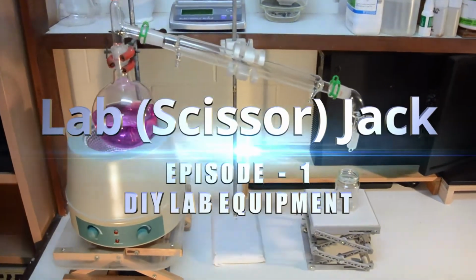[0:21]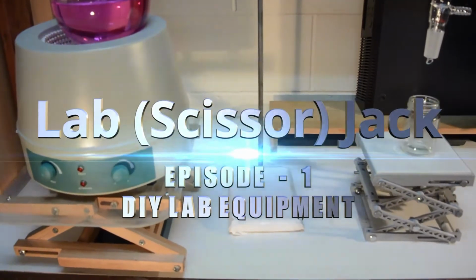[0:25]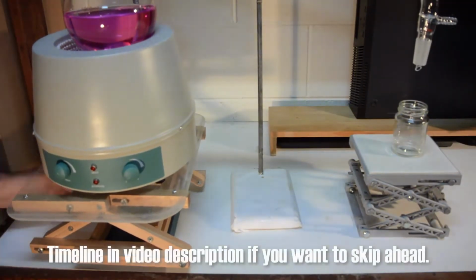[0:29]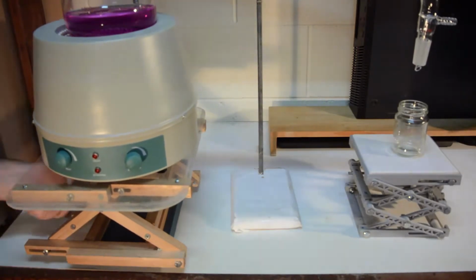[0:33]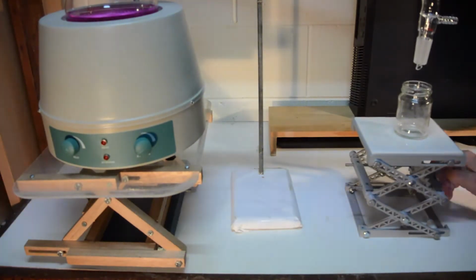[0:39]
Welcome to episode one of a new series on DIY equipment for home chemistry labs, which is designing and making a lab scissor jack. A scissor jack being very useful in commonly performed procedures such as distillations, greatly assisting in setup convenience and safety. There is both a 3D printed version, and for those without access to a 3D printer, a version made from wood, which simply requires a handsaw and drill.
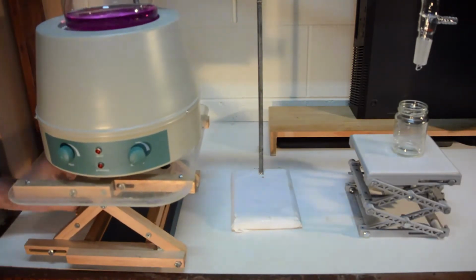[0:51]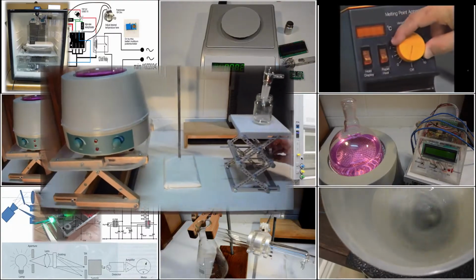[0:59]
The wooden version enables a very robust lab jack, capable of safely supporting tens of kilograms, but which also truly does enable a DIY scissor jack for just a few dollars, without the hidden need of hundreds of dollars or more in tools. As I said, this is the first in a series documenting the design and making of various
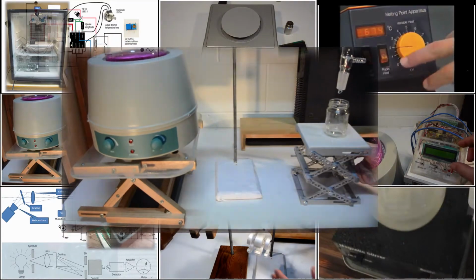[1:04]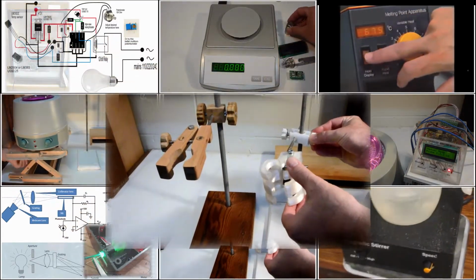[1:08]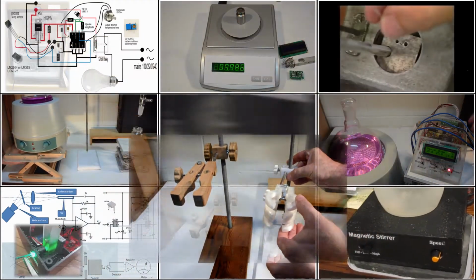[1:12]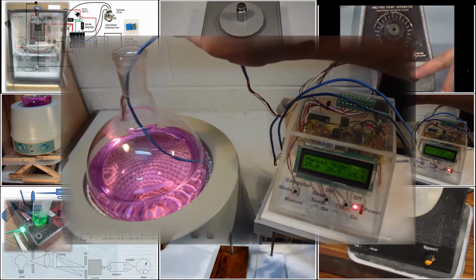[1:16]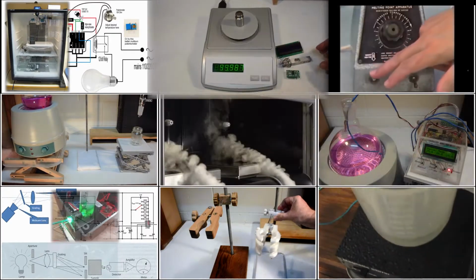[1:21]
homemade lab equipment. A number of items have already been completed, such as retort stands, boss heads and clamps, both 3D printed and wooden versions, a digital thermometer with up to 8 simultaneous sensors, Bluetooth control and recording via an Android phone app, and a digital balance made from readily available and inexpensive parts.
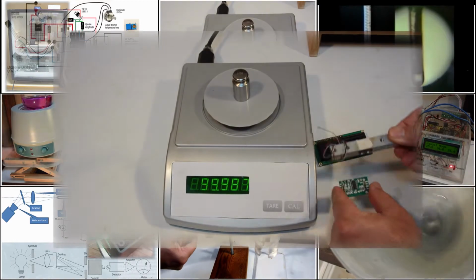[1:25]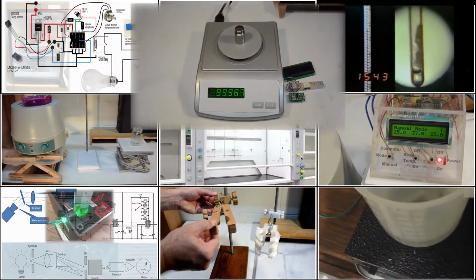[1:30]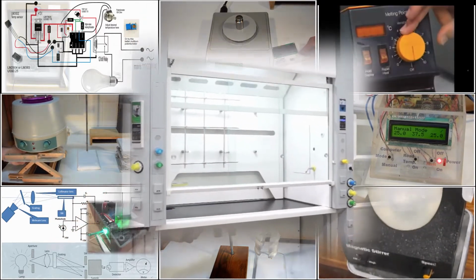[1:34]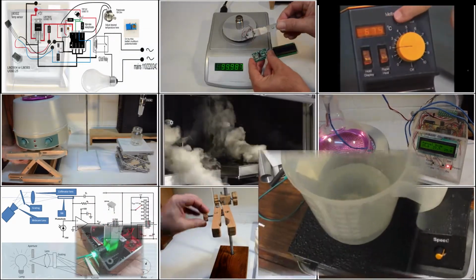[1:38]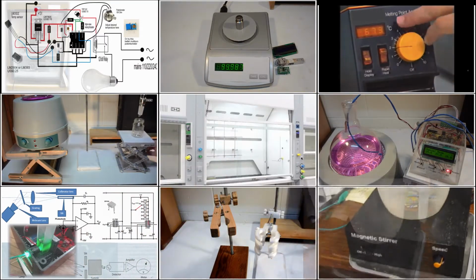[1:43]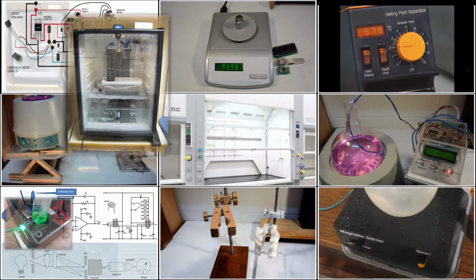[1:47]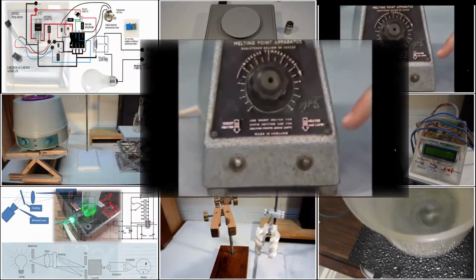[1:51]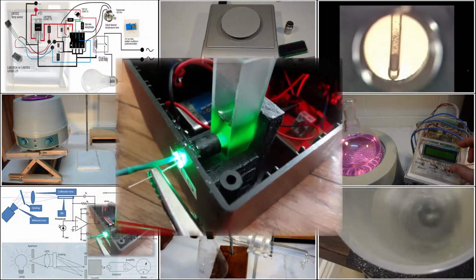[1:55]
Other planned DIY equipment include a fume cupboard, an essential safety item, a magnetic stirrer from salvaged parts from a broken desktop computer and discarded washing machine, a temperature-controlled incubator for microbiological experiments, a melting point apparatus to help identify synthesized chemicals, and continuing the theme of quantification, a DIY spectrophotometer for colorimetry and spectrometry.
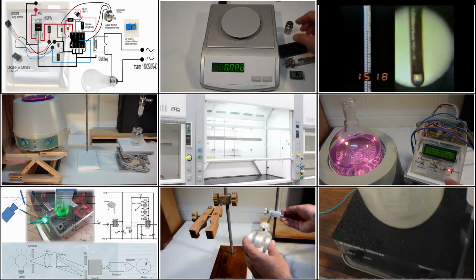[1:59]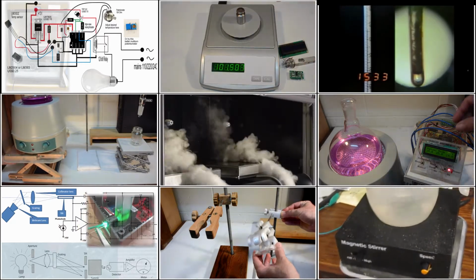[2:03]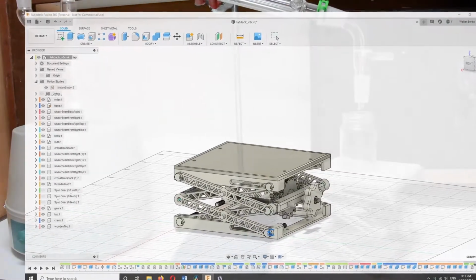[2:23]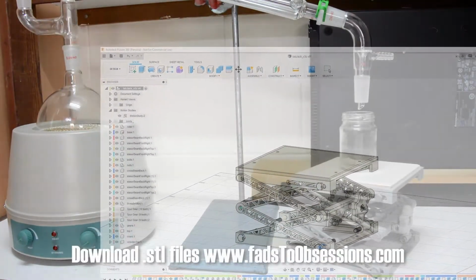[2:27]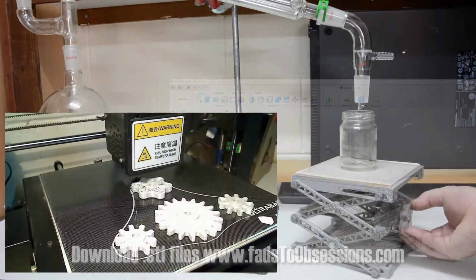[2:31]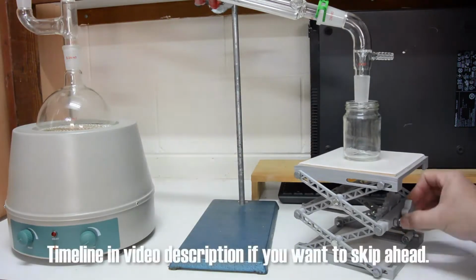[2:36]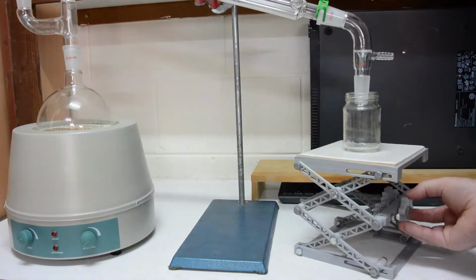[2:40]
Starting with the 3D printed version of the scissor jack, I will briefly go through the Fusion 360 design, then the 3D printing and settings used, and finally the assembly of the parts. A further section details the wooden version, which both shows how to make a functional version without needing a relatively expensive 3D printer, but which is also capable of handling a load of many kilograms.
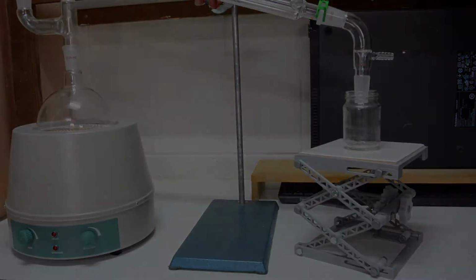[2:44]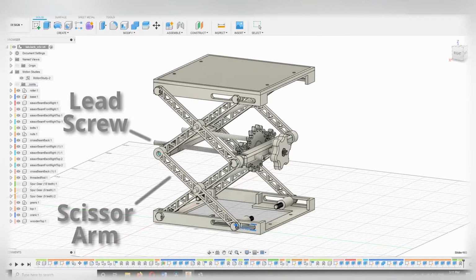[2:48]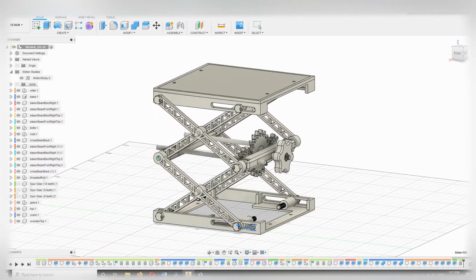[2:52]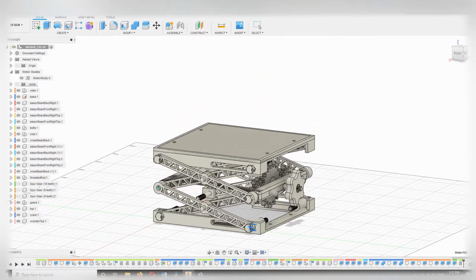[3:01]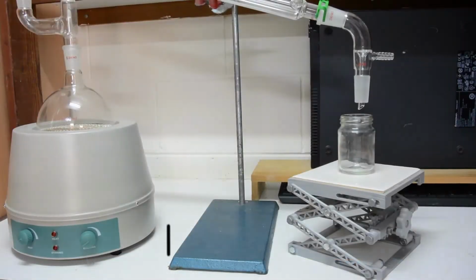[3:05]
A scissor jack works by using a lead screw to either draw together or push apart opposing cross scissor arms, which increases or lowers the height of the attached platform. Ganging together multiple scissor arms allows increasing the effective height without needing to increase the length of the scissor arms, and hence the footprint of the scissor jack.
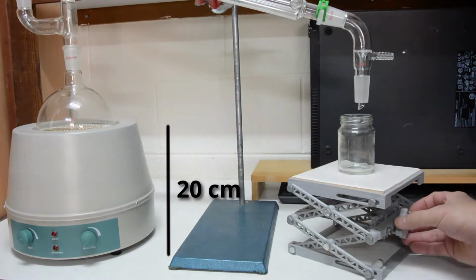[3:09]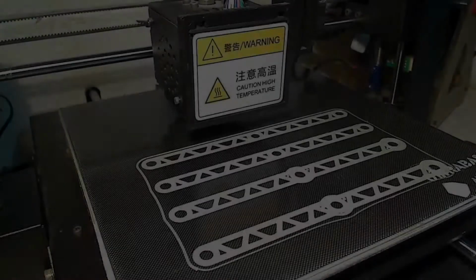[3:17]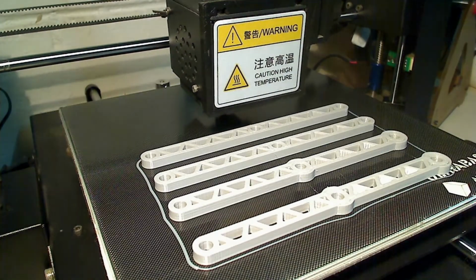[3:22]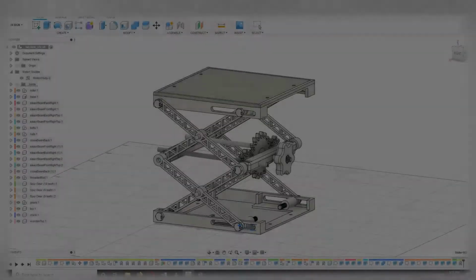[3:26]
I wanted to be able to reach a minimum height of approximately 20 centimeters, which is the height of my heating mantle, but also keep the footprint of the lab jack to about the diameter of a 1 liter flask to minimize bench surface area used. Due to my 3D printer, I'm also limited to about 20 centimeters linear length of any components to be made.
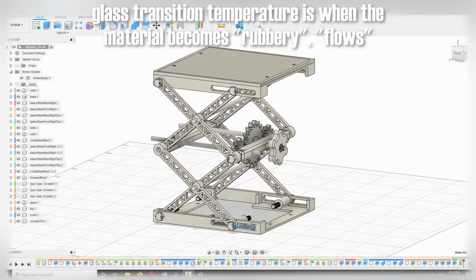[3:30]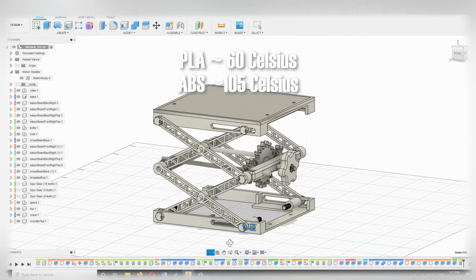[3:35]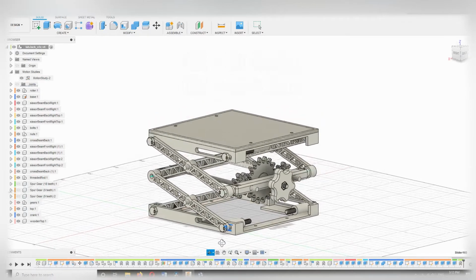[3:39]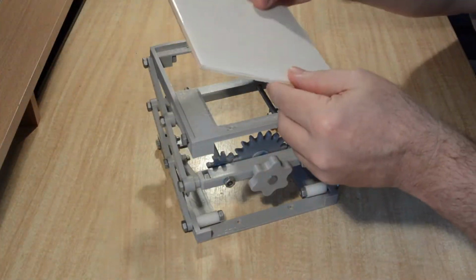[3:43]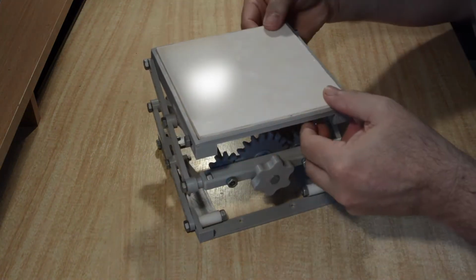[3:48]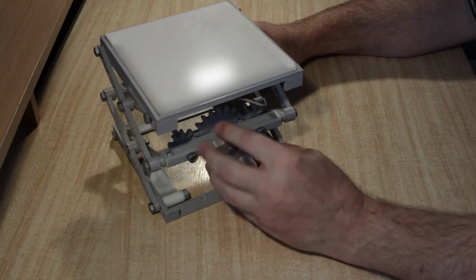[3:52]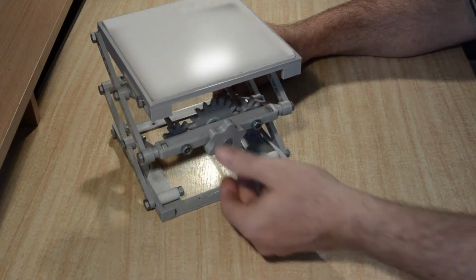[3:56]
Finally, while not really expecting to use the lab jack with containers much above room temperature, it would be good to have the option if needed, which means a solid PLA or even ABS 3D material for the support platform is probably not recommended. This is why I used a ceramic tile I had on hand as the support platform. This saves some cost and time in the 3D printing, gives a robust surface with temperature, and also, as a bonus, it will withstand spillages from various solvents, acids, etc., and if it gets damaged, it can be replaced.
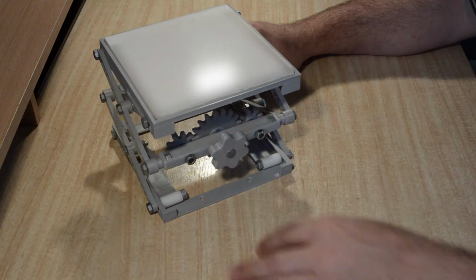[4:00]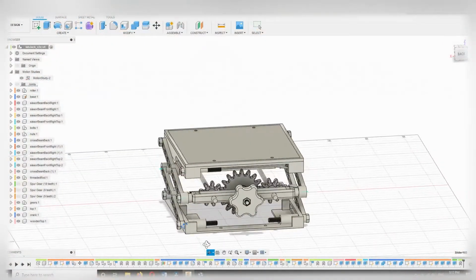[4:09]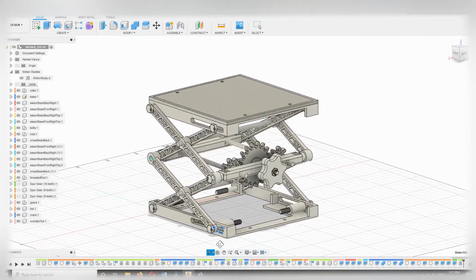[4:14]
The ceramic tiles I had on hand, left over from a bathroom refurbishment, were 15 centimeters square. The 15 centimeters also meant only two sets of scissor arms were required to give a total possible height of 25 centimeters when fully extended, while still staying within half the base width for stability.
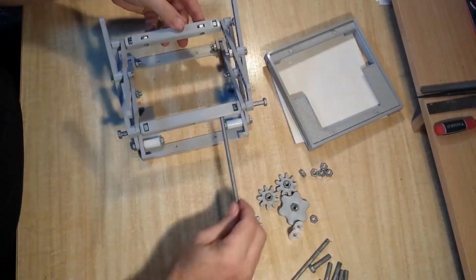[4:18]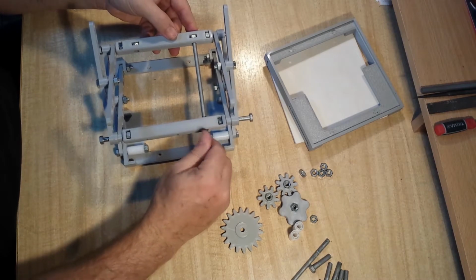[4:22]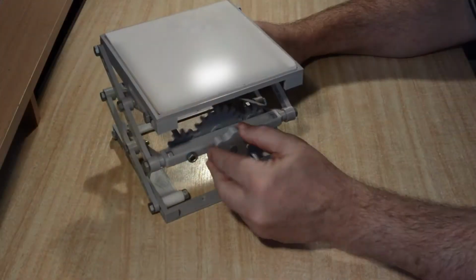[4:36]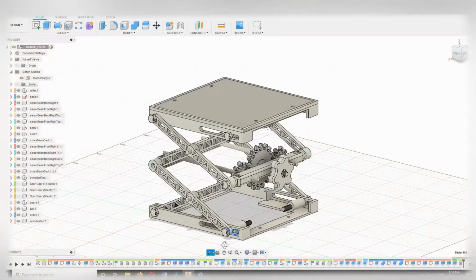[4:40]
The lead screw is simply 6mm threaded rod with the associated nuts. Only a central lead screw is really required as a minimum, but due to the flex in the plastic parts and joints, dual lead screws gave a smoother, more robust action, and also gave me an excuse to play with 3D printed gears, which also give the benefit of quicker height adjustment. So that all led to this final design here in Fusion 360.
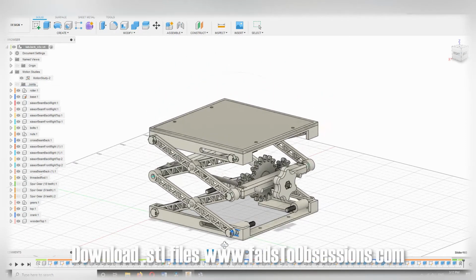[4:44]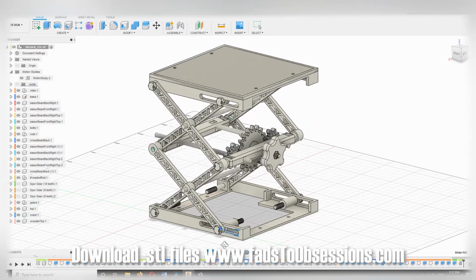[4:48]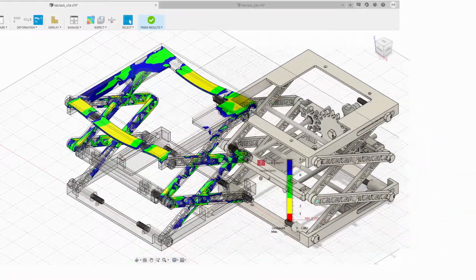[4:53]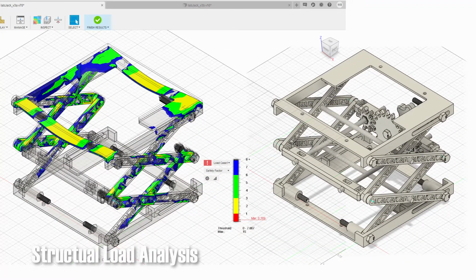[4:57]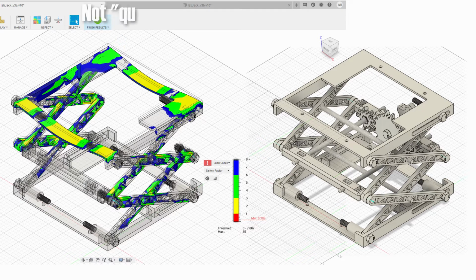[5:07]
Before moving on to the 3D printing, there is another benefit of using a ceramic tile or similar for the platform. Fusion 360 enables load and stress simulations to be performed, using the physical characteristics of the various materials from which the final item will be made, to show how the design is likely to perform. And this showed that if the support platform of the lab jack was 3D printed in PLA, it will likely sag and fail by bending inwards.
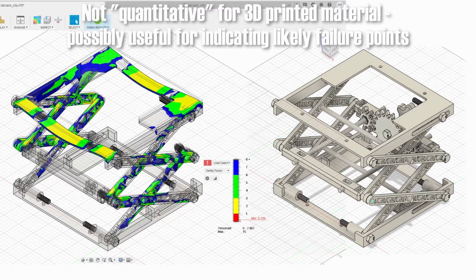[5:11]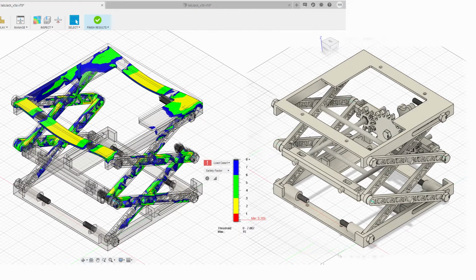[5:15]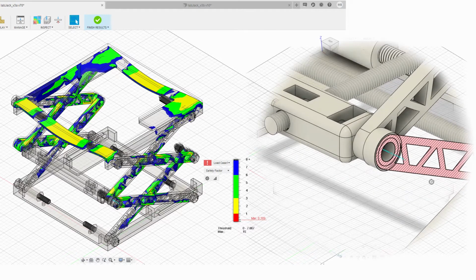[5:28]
While the simulation cannot really be used to usefully quantitate likely safe load weight, etc., because the simulation doesn't take into account the 3D printed layer lines, how the 3D printed material is formed. It assumes solid materials. It does usefully show likely failure points in the design, and hence the extra benefit of the ceramic tile in giving overall rigidity, but also that the extra material at the joints of the scissor arms would be of benefit in distributing applied load rather than being placed elsewhere.
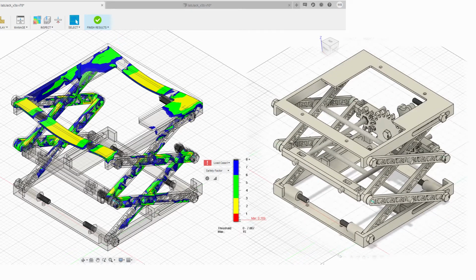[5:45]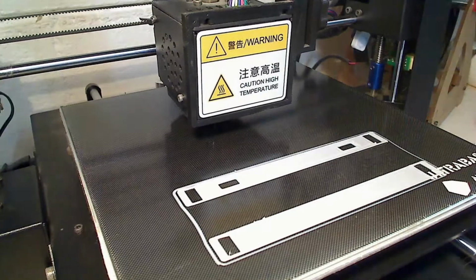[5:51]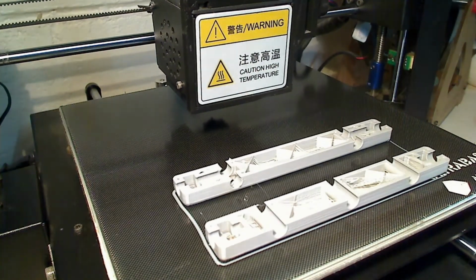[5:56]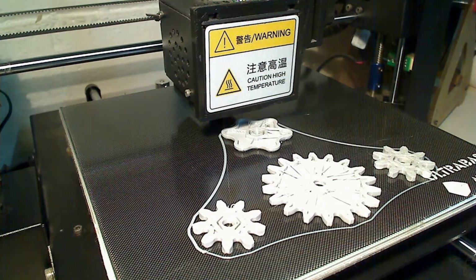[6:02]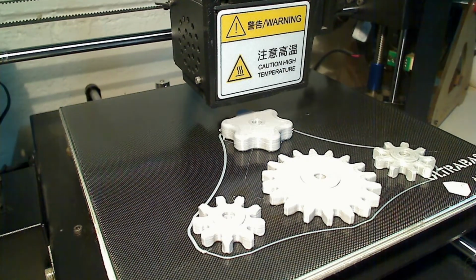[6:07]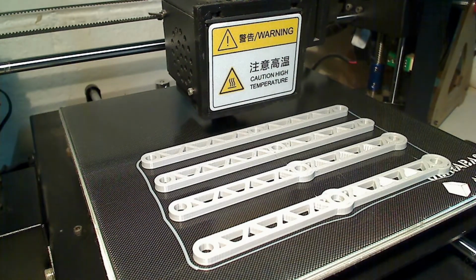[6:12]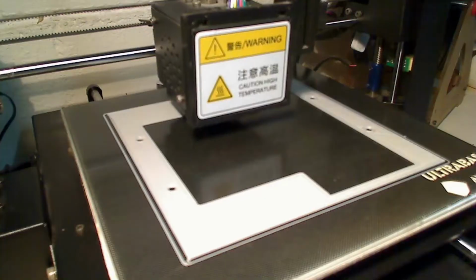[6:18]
Note the truss type design of the scissor arms, which more effectively uses the 3D printed plastic material to support and distribute the load. The 3D printing itself is straightforward, with no printing supports necessary. I use PLA at a temperature of 205 degrees Celsius, a bed temperature of 50 Celsius, with a 0.25mm layer height, and a 0.4mm nozzle on an Anycubic i3 Mega. The scissor arms were printed with 100% infill, while the other components had 5% infill. The STL files are available on my website for anybody interested, and if you would like any further details, let me know in the comments.
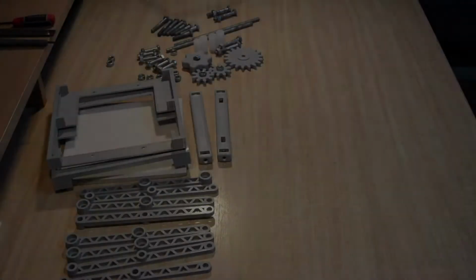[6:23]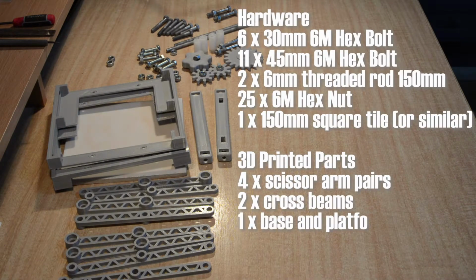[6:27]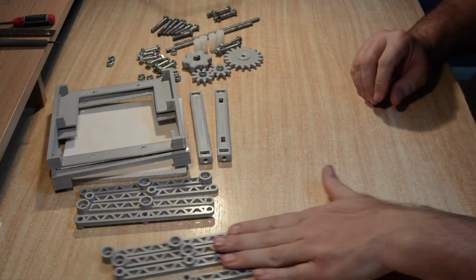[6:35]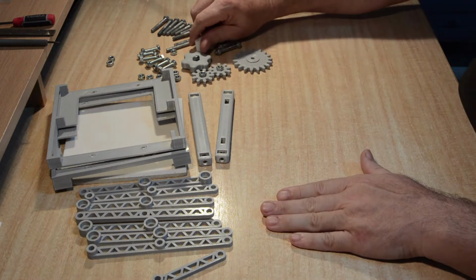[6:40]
Just quickly before we get into the assembly, this is the hardware list of parts needed, which is also listed in the video description. So once you have all the various 3D printed parts completed, the only thing I didn't print were the bottom rollers, which I salvaged from an old printer teardown, and the hardware parts, the hex bolts, nuts and 6mm threaded rod.
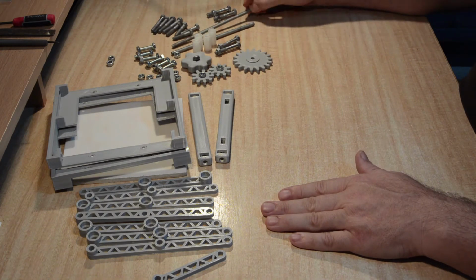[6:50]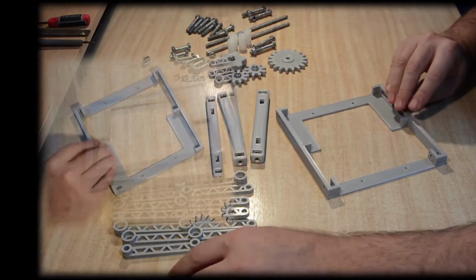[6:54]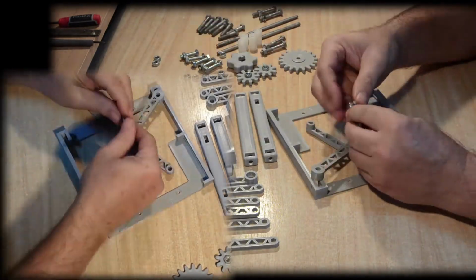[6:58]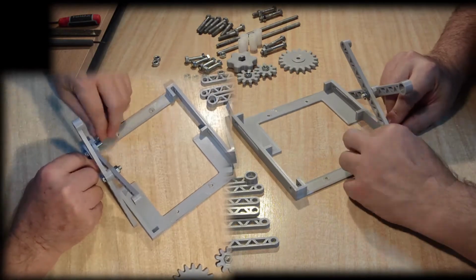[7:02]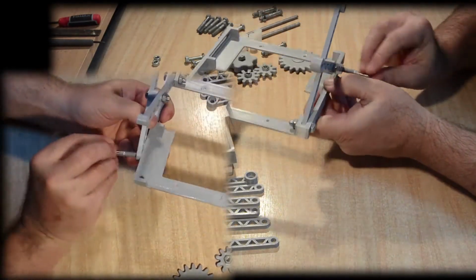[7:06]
You start the assembly with the base and the first set of scissor arms, which are connected by a hex bolt and nut. And then this first pair is attached to the base with another hex bolt. The other side of the bottom of the scissor arm is now attached to the base with a hex bolt, together with a roller, which completes the first pair.
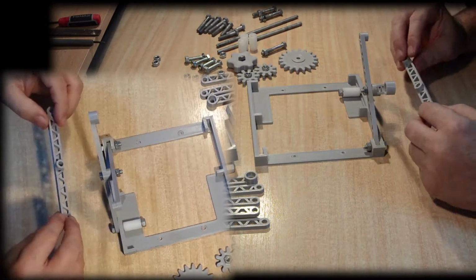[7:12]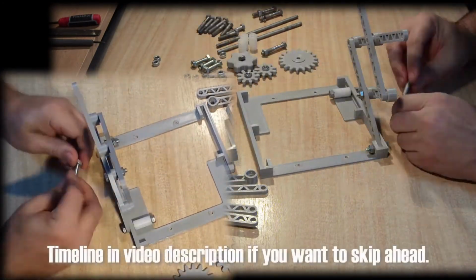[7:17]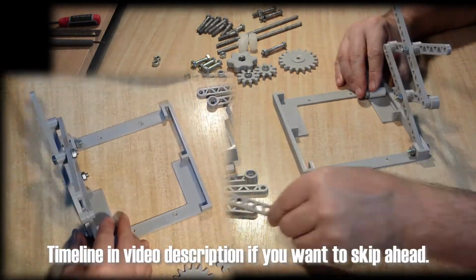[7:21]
Since a picture is 1,000 words, a video should be even more so, so I'll stop talking now, and leave the video to show the rest of the assembly. Happy to answer any questions in the comments if something is not clear.
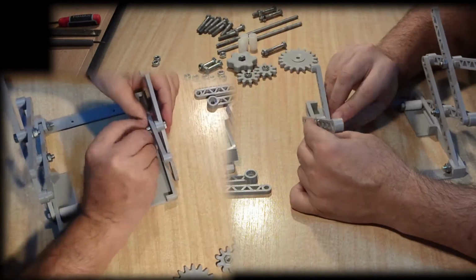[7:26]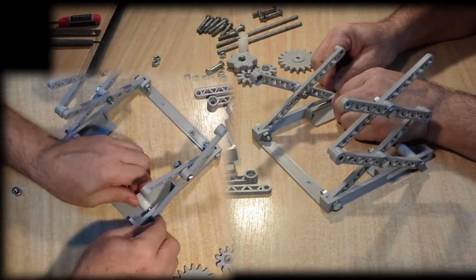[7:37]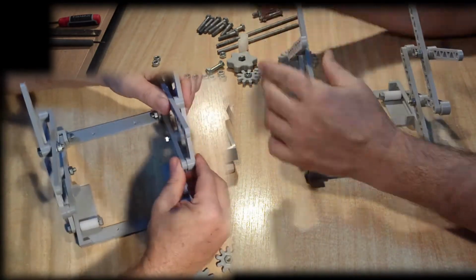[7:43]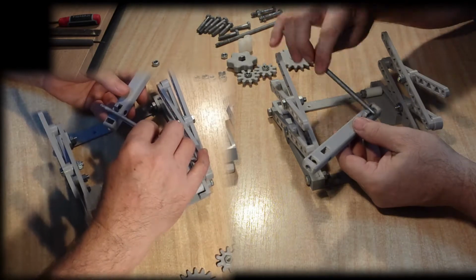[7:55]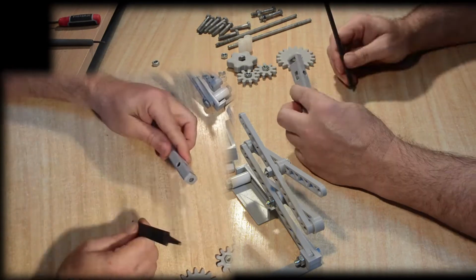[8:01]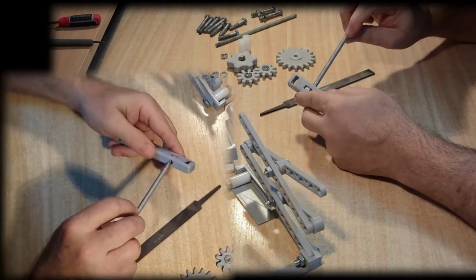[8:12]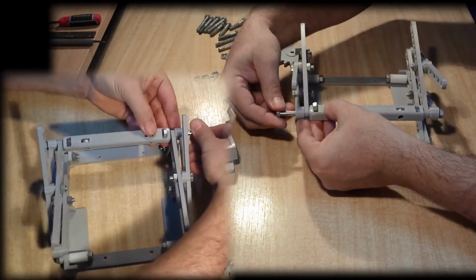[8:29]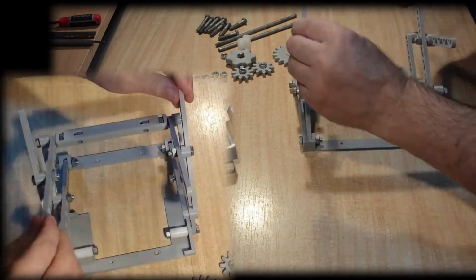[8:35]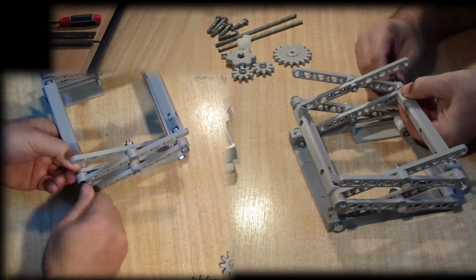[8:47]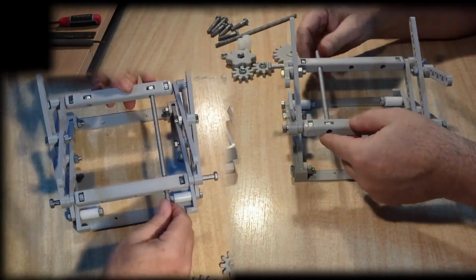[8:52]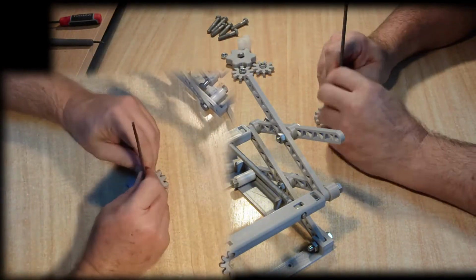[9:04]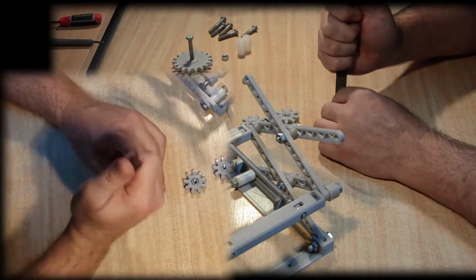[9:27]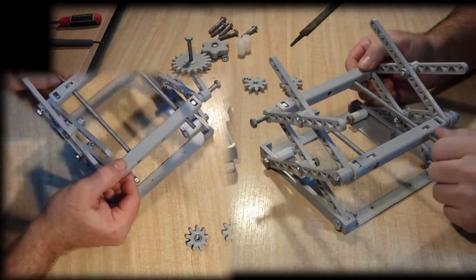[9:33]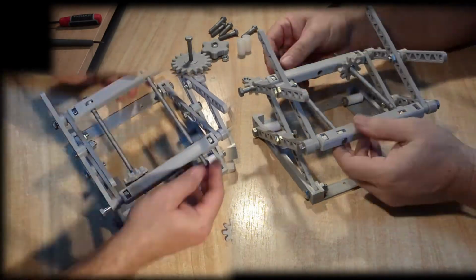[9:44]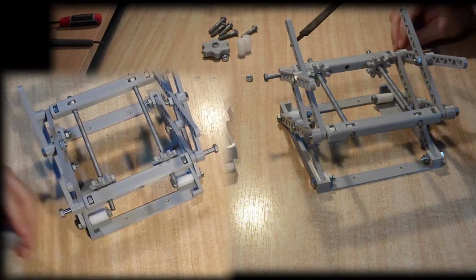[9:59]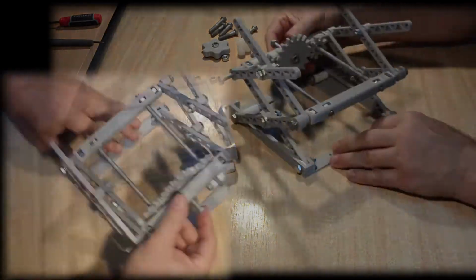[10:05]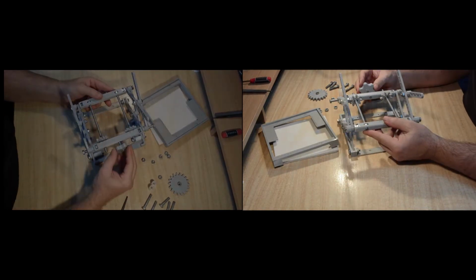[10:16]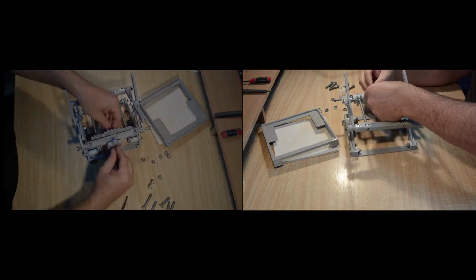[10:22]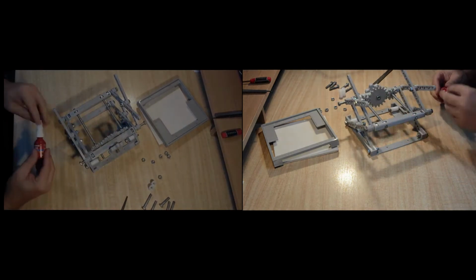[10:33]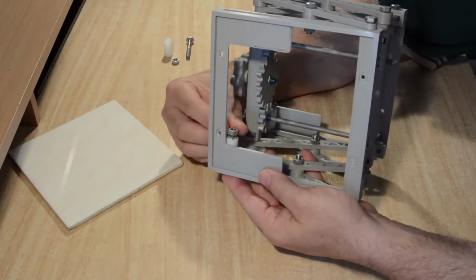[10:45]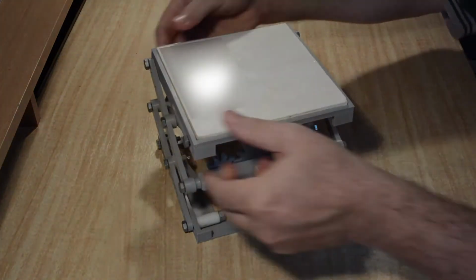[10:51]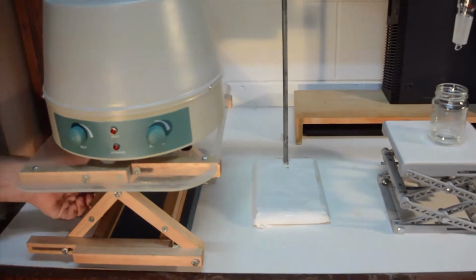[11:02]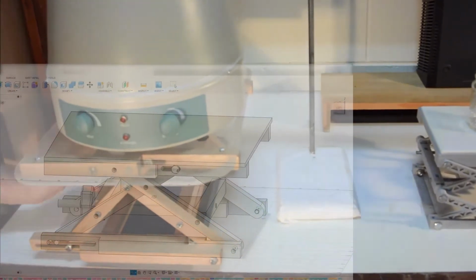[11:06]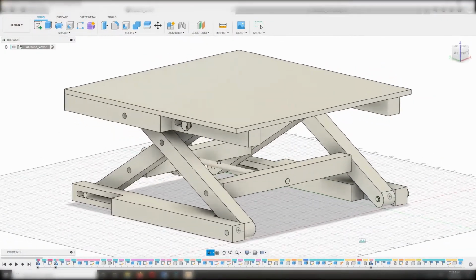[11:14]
The version of the lab jack made from wood was for two reasons. Firstly, the wooden version simply requires a handsaw and drill, which means you can really make a DIY scissor jack for just a few dollars, without the hidden cost of hundreds of dollars or more in tools.
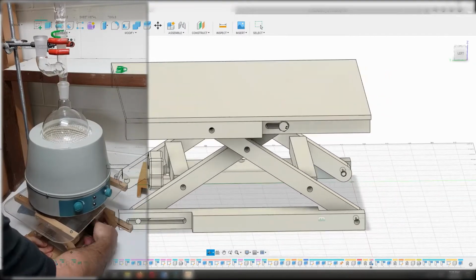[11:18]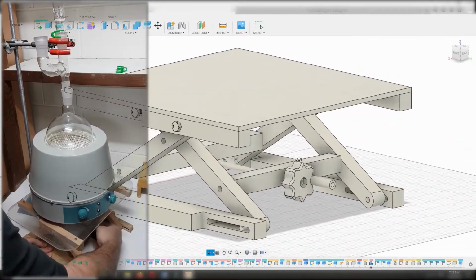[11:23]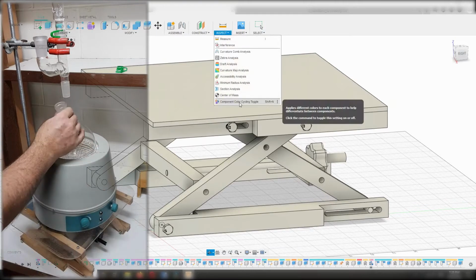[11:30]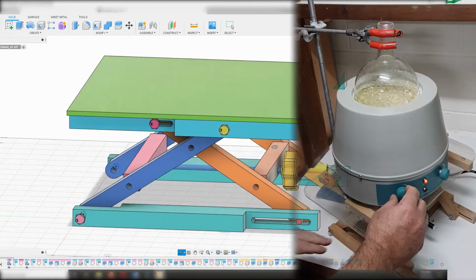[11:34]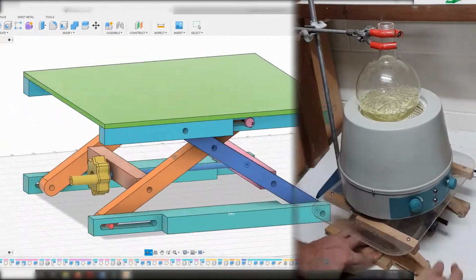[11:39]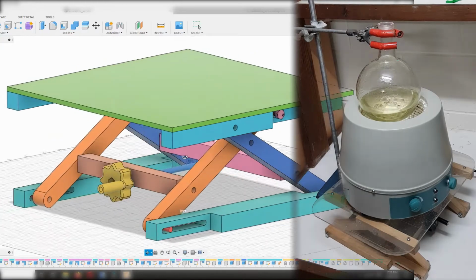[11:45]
And secondly, I wanted a larger version that would be very robust, capable of safely supporting potentially tens of kilograms, as it would be very convenient to be able to lower the heating mantle to remove a flask, without needing to remove attached distillation equipment, for example. And also, if the contents of a flask were foaming or excessively bumping, lowering the heating mantle and rapidly removing the heat source entirely, rather than just turning off the heat, which leaves residual heat going into the flask from the heating mantle, could save the contents of the flask and also gives greater safety options.
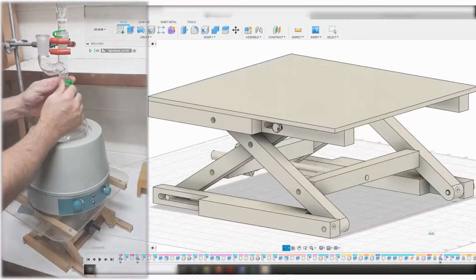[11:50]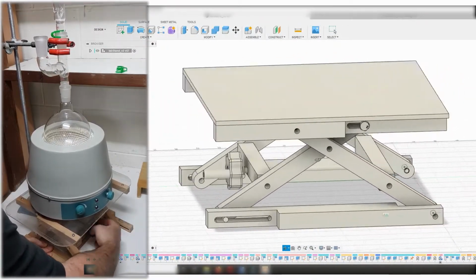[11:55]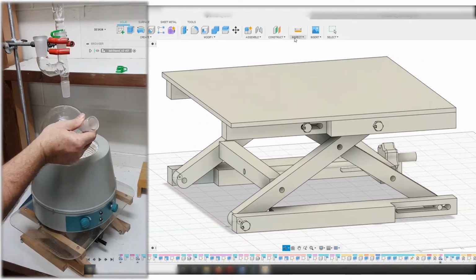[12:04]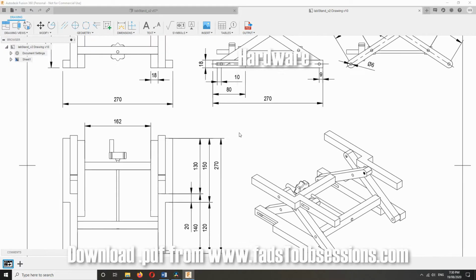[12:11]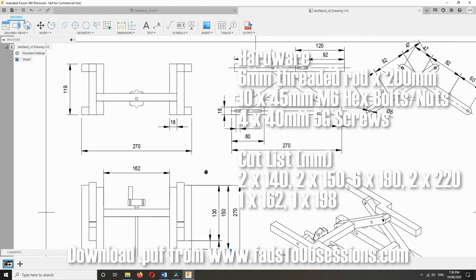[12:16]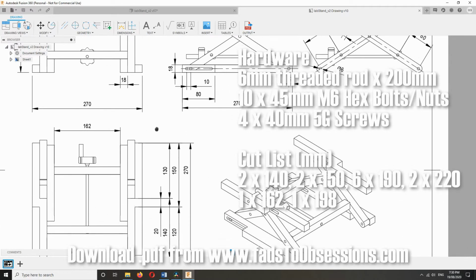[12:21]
The aim was to give a range of height adjustment of about 10 centimeters to allow removing 1 liter flasks in my heating mantle when attached to a condenser, for example, and to use 18 by 18 millimeter standard stock hardwood available from my local hardware shop. The design was done in Fusion 360, which allows generating dimension drawings from which you can work out your cut list, etc. The hardware required and cut list is shown. A total of about 2.5 meters of stock 18 by 18 millimeter is needed, which comes in standard lengths of 2.8 meters, so this worked out nicely.
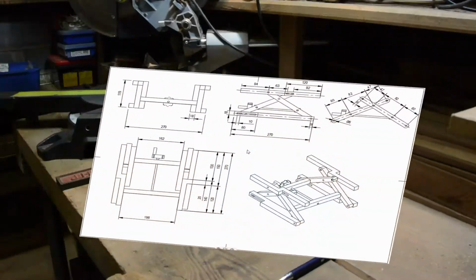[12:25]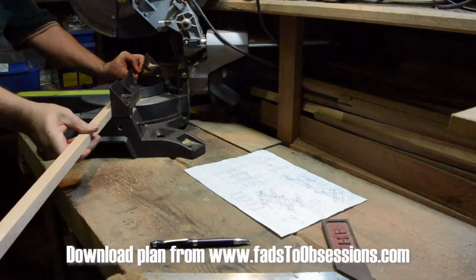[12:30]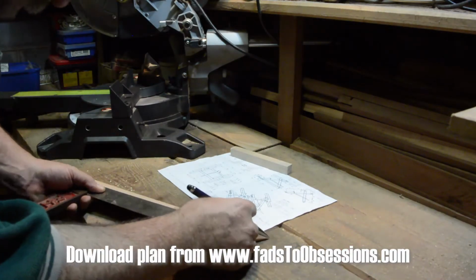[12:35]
The construction of the wooden lab jack starts with cutting the various pieces required to size. I have a crosscut saw which makes things a little easier, but a handsaw would obviously do the job if you don't have access to power tools.
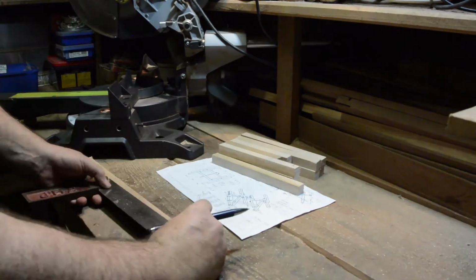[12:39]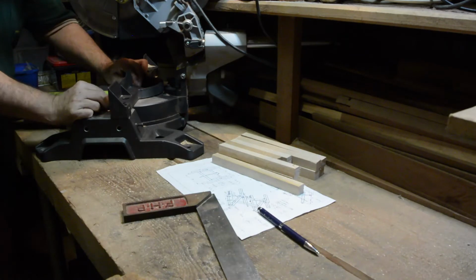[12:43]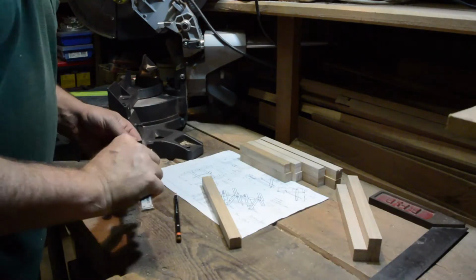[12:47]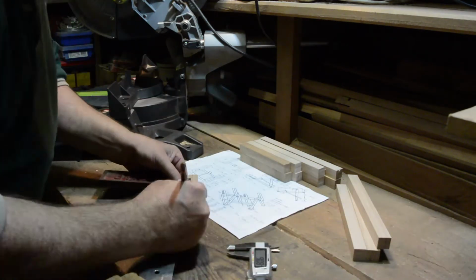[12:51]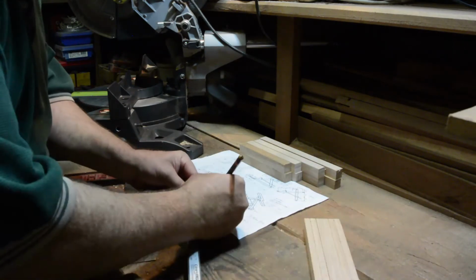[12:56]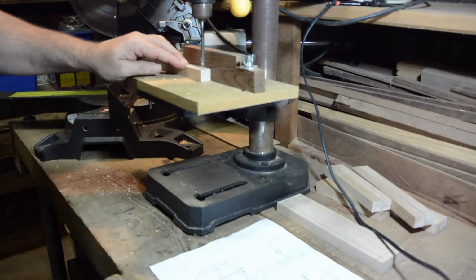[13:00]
Next is to measure and mark up the various pieces for drilling of the various necessary holes and slots. And then onto the actual drilling. I use the drill press, but this could be done with a hand drill, you just need to take some extra care.
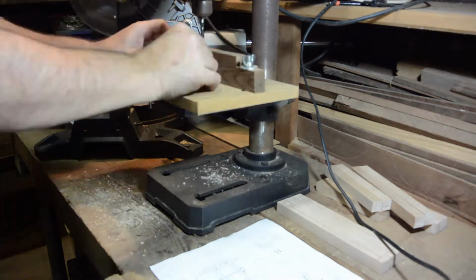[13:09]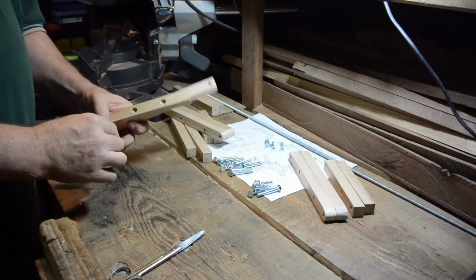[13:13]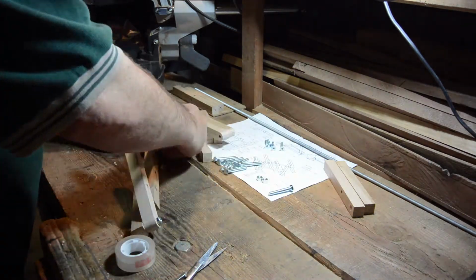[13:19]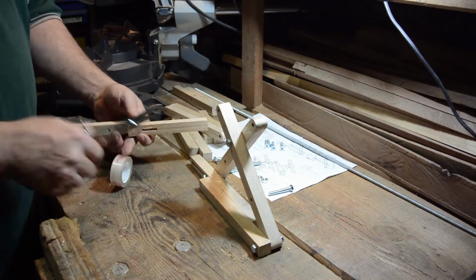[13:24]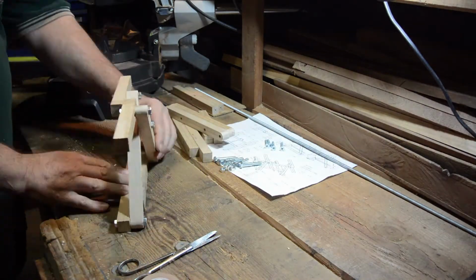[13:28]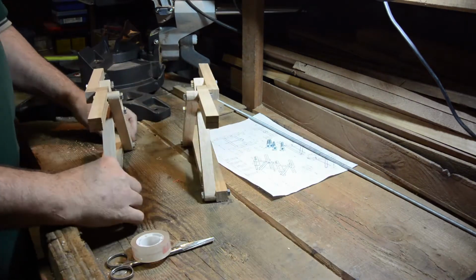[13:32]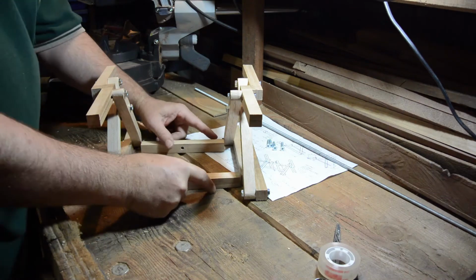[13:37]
Before going any further, I did a dry test run of the assembly of the scissor jack, just using some sticky tape to temporarily hold the parts together. While this is not that necessary, it's good to make sure that all the parts are correct, and double check to catch any mistakes before the final gluing up stage. Okay, with that out of the way, onto the final assembly.
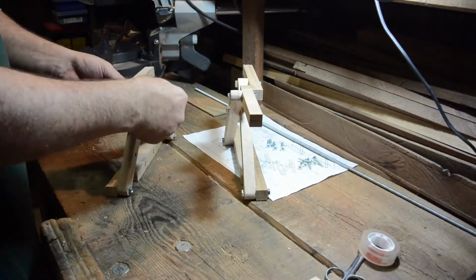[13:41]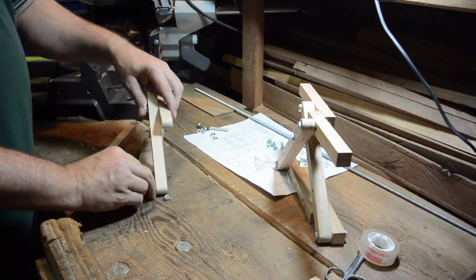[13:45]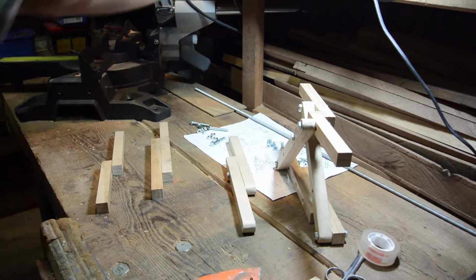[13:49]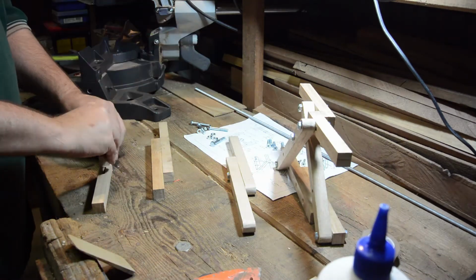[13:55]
The actual assembly is relatively straightforward. I use wood glue and wood screws to hold the various parts together, which means you don't need to clamp and wait for the wood glue to dry while doing the assembly, and the screws give some extra robustness to the final item.
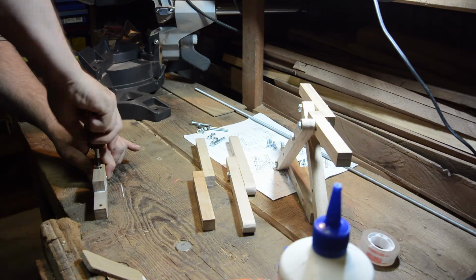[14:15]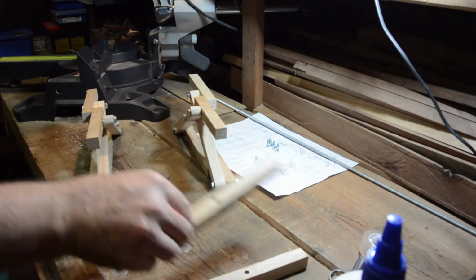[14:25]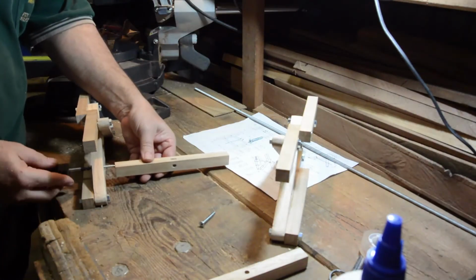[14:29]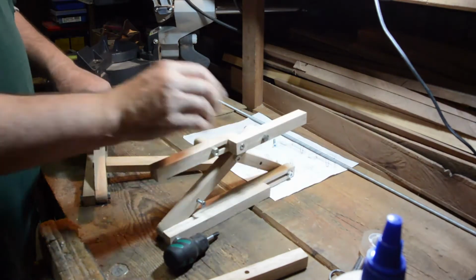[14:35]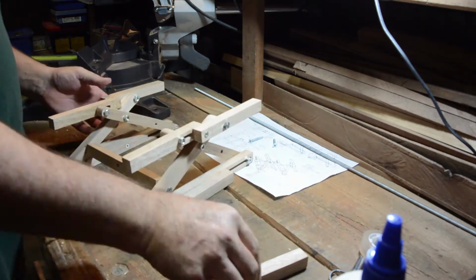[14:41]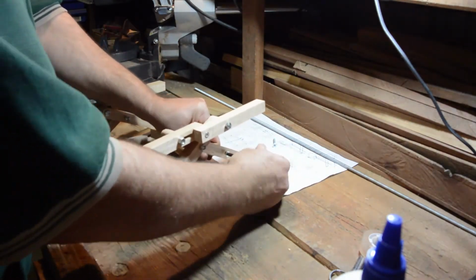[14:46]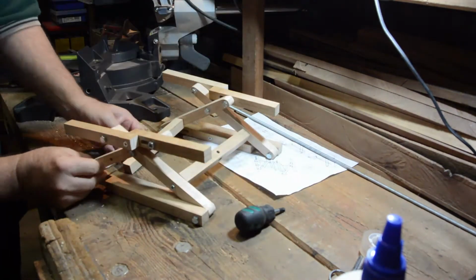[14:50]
The two cross beams, which hold the lead screw made from the threaded rod, are attached to the cross scissor arms using timber screws. The screws both act as retainers and also axles to enable some rotation of the cross beams, which is necessary as the vertical face of the cross beams changes angle with respect to the cross scissor arms as the scissor arms are raised or lowered. So this means tighten these screws to ensure that the side faces of the cross beams are a snug fit with the scissor arms, but not so tight that the cross beams cannot move.
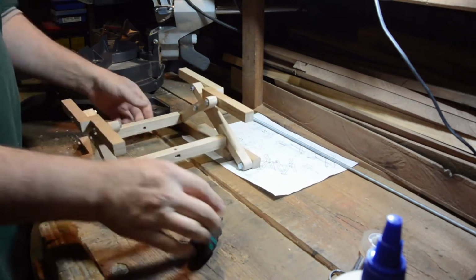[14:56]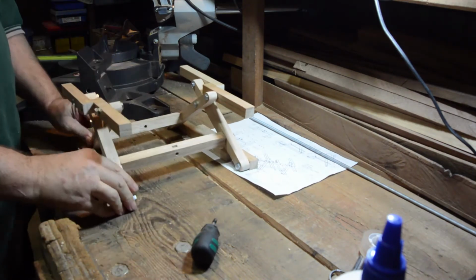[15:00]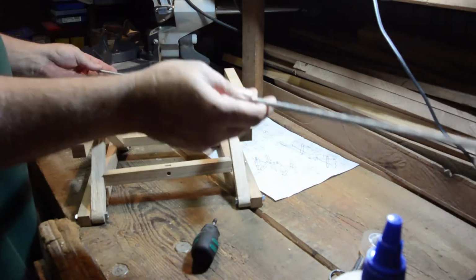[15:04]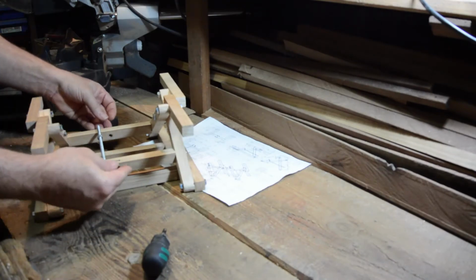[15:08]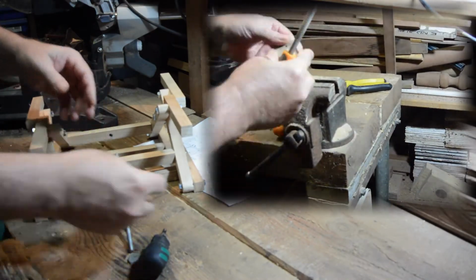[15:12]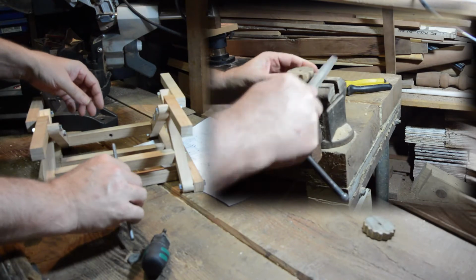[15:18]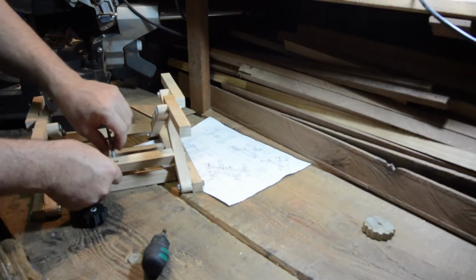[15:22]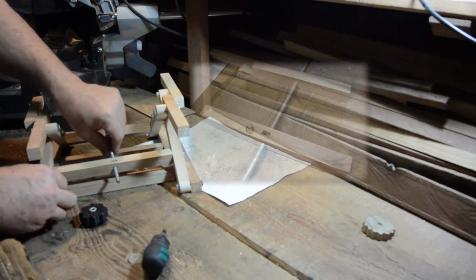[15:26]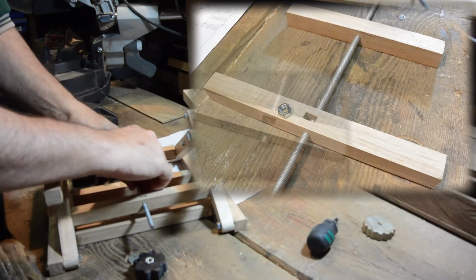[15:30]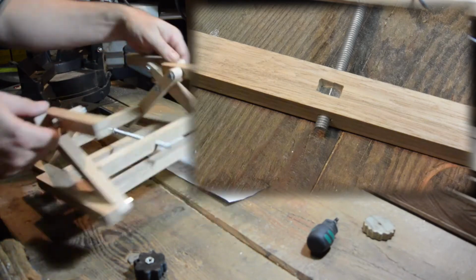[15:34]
The next step is inserting the lead screw. I made a wooden knob, but my lack of skill gave a pretty crappy outcome, so I made a more aesthetic one by 3D printing. The lead screw is simply made from a 200mm long piece of 6mm threaded rod. Into one of the cross beams I cut a slot to tightly fit an M6 hex nut, into which the threaded rod will run. This will form the nut of the lead screw. It is important that the M6 hex nut in the cross beam slot is tight and cannot turn.
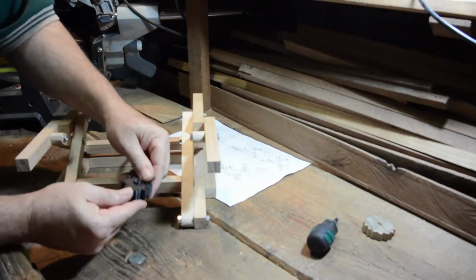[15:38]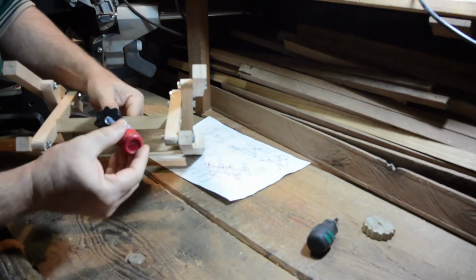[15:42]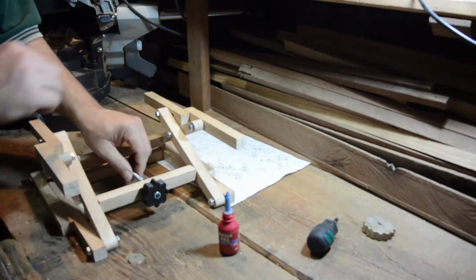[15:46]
The other end of the threaded rod is fitted through the other crossbeam, and the retaining nuts and the adjustment knob are attached. I'll use Loctite glue to fasten the nuts onto this end of the threaded rod. Again, important that these nuts are firmly glued to the threaded rod and can only turn together.
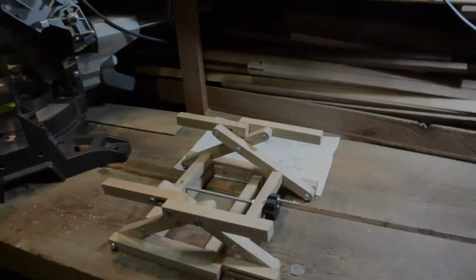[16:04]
Now need something for the top platform. You could use plywood or whatever, but better to have something robust against liquids in case of spills. I had an old piece of perspex on hand, which fits the bill nicely.
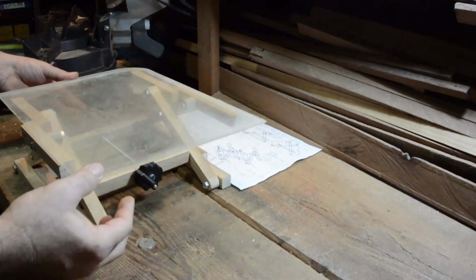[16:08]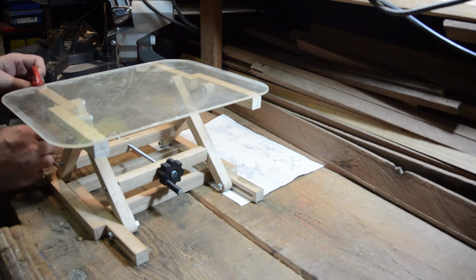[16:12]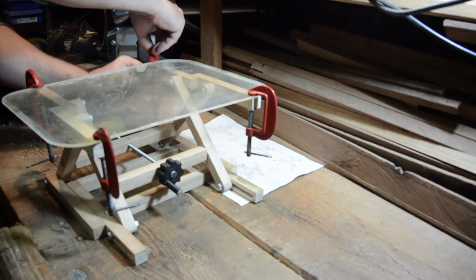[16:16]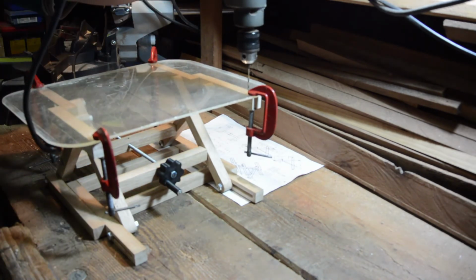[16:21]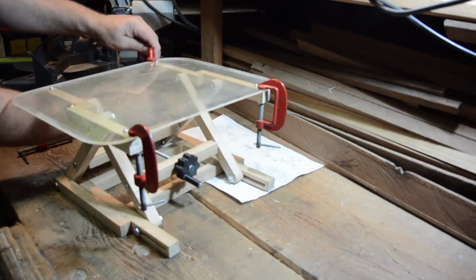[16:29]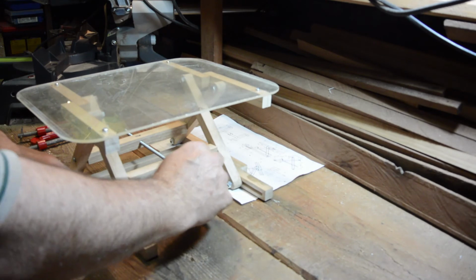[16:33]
After cutting the old perspex sheet to be symmetrical and rounding off the corners with a file, I clamped the perspex sheet to the lab jack in its final position, so I could drill the attachment holes. This way, you cannot make a mistake with the alignment of the holes in the perspex and the support beams of the lab jack. Final job is to simply screw in the self-tapping screws to attach the platform to the base. Well, that's it for the wooden version of the lab jack.
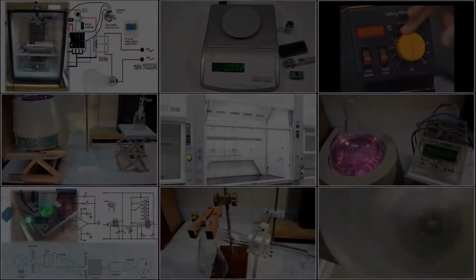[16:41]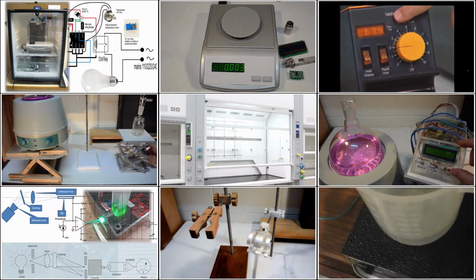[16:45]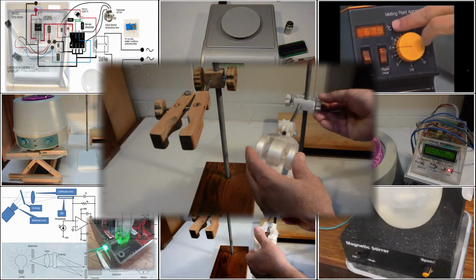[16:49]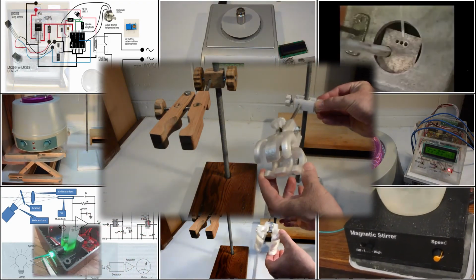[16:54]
As I said, this is the first in a series of documenting the design and making of various homemade lab equipment. I've already completed a number of these items, with the next video ready for upload about retort stands, boss heads and clamps, both 3D printed and wooden versions.